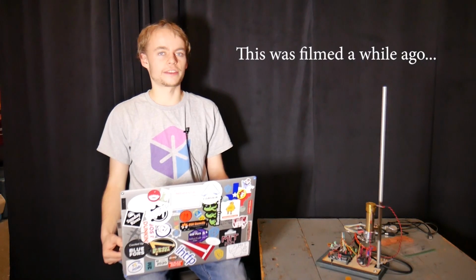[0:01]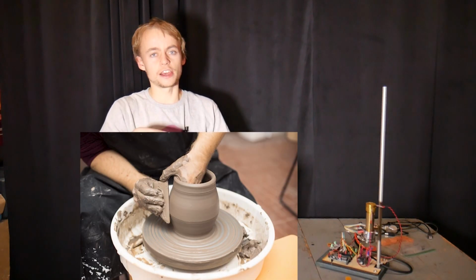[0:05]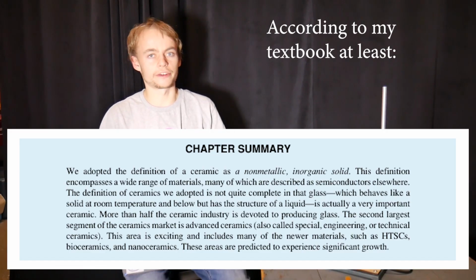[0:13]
Last semester I took a ceramics class. Now I know what you might be thinking, oh, Tanner was there with a spinning wheel making pottery and whatnot. But this is not what the class was about. This was about analyzing ceramics, and ceramics meaning not only pottery, but glass and rock and granite and all other kinds of ceramics, and looking at that from both a scientific and archaeological perspective.
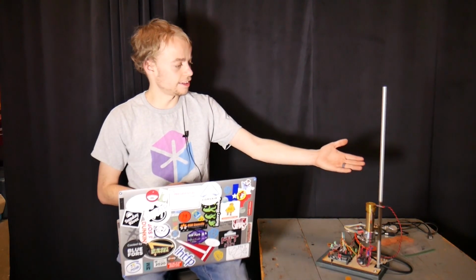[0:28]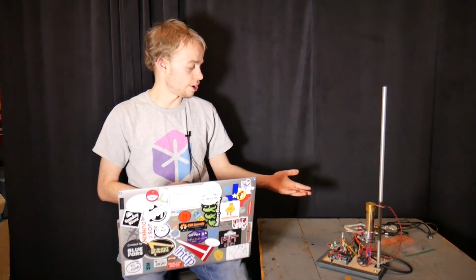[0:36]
The final project for this class was very open-ended, and I chose to make something called a Lees disc apparatus. Now, a Lees disc apparatus is something that measures the thermal conductivity of insulators. And in this video, I'm going to show you how I made this and show you it working, because it's pretty cool. Let's get started.
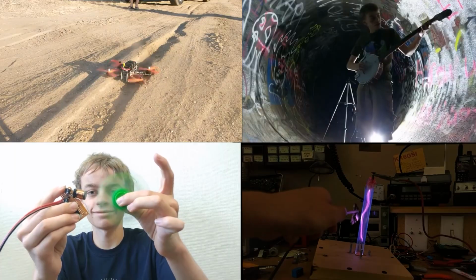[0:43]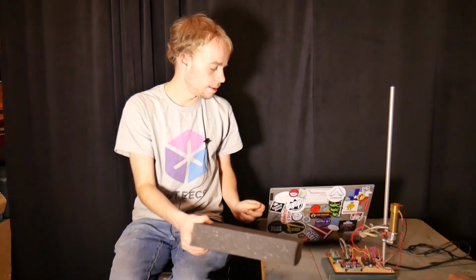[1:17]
Thermal conductivity is a physical property of a material. It describes a material's resistance to the flow of heat flowing through it. On this piece of copper, for example, the thermal conductivity is approximately 388 watts per meter Kelvin. This means that it is a very good conductor of heat. If I were to hold this piece of copper and put something hot on the other side, like a soldering iron or a flame, my finger holding the other side would immediately start getting very hot, because it conducts heat very quickly and very efficiently through it.
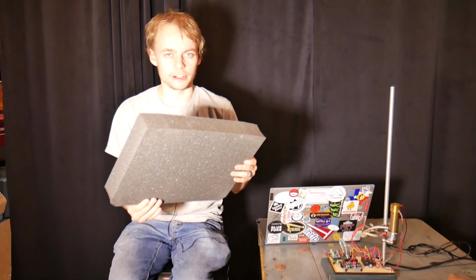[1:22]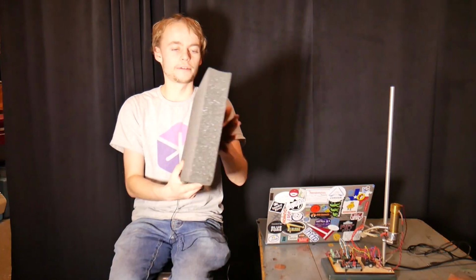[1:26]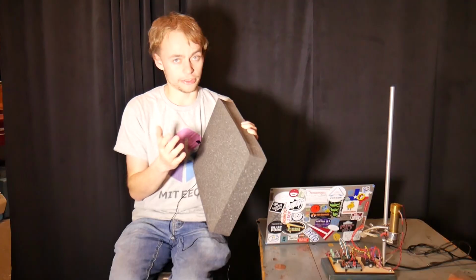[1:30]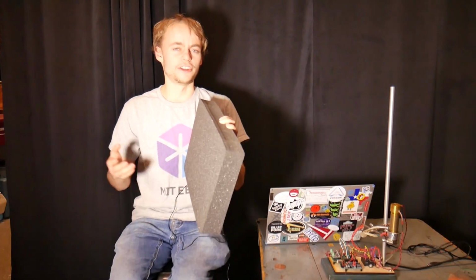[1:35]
On this piece of styrofoam, for example, that has a thermal conductivity of around 0.01 watts per meter Kelvin, I could put my hand on one side and have some large heat source that didn't melt the styrofoam, obviously, and I could keep my hand there and it would be fine because there's not very much heat flowing through it.
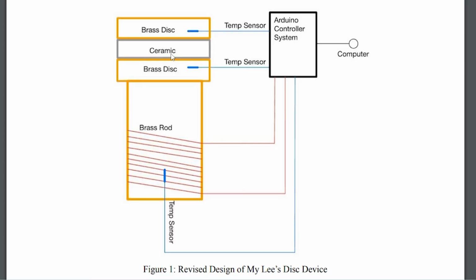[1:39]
It's fairly straightforward to measure the thermal conductivity of a material using a Lees disc device. The basic working principle, shown in this diagram, uses two brass discs with your test material in between. The bottom brass disc is heated to a constant temperature using some type of heater and feedback system. The heat then flows via conduction through the ceramic or other test material and into the top brass disc. This heat then dissipates via convection and radiation into the outside world.
If you leave the system running for long enough, it's going to reach a steady state where the top brass disc is at a constant temperature. This means that the heat being transferred into this brass disc through this test material is equal to the heat leaving the brass disc through other methods. The temperature difference between the top and bottom brass disc, along with some other properties of the top brass disc, the ceramic, and other things, can be used to determine the exact thermal conductivity of your test material.
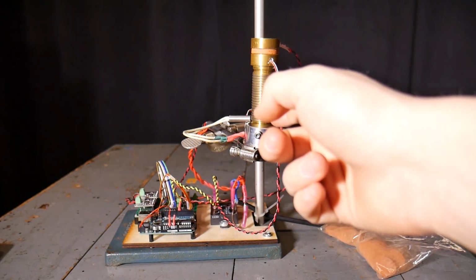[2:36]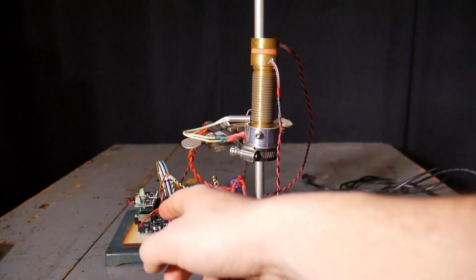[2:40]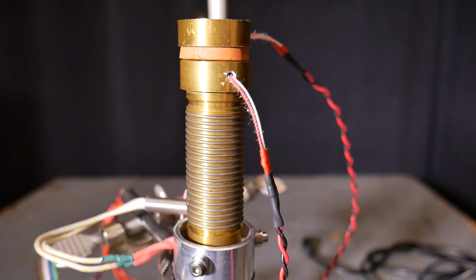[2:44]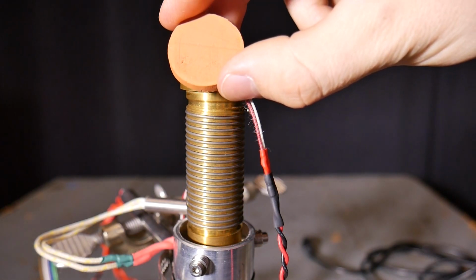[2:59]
This is my Lees disc device. It can be divided into two parts. We have the measurement unit up here and the electronics down here. Everything is mounted on this lab stand that I found in the trash. This is the actual measurement section of my device. This is the top brass disc. It has an embedded thermal probe inside. This probe goes all the way to the very middle and can give very accurate readings of this brass disc temperature. I have my material that I'm measuring.
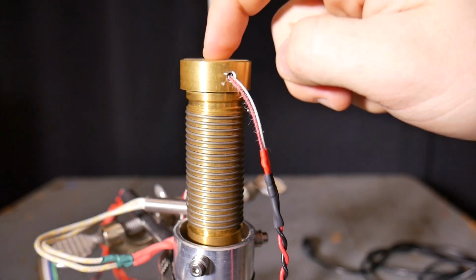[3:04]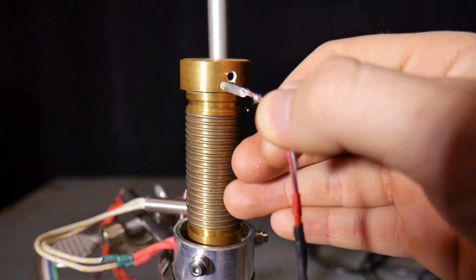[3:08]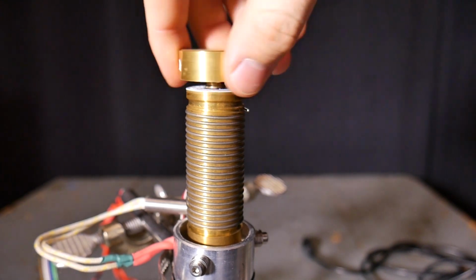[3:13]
This is fired red ball clay. Then I have the bottom brass disc that's attached to the heating element. The bottom brass disc also has a thermal probe inside and can be unscrewed from the heating element to allow for different size brass discs to be attached. This works if you want to measure smaller or larger samples.
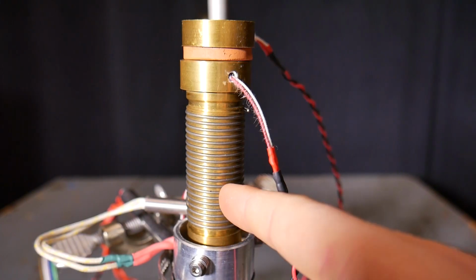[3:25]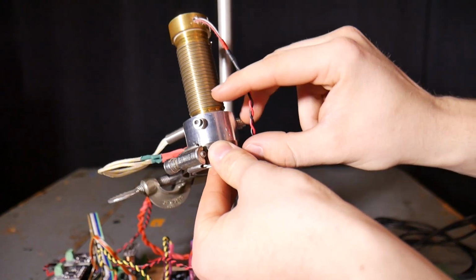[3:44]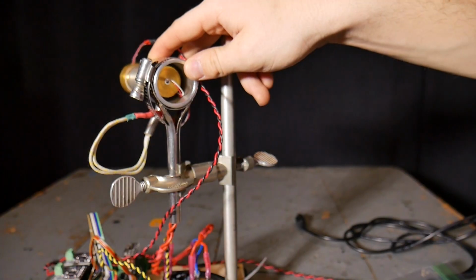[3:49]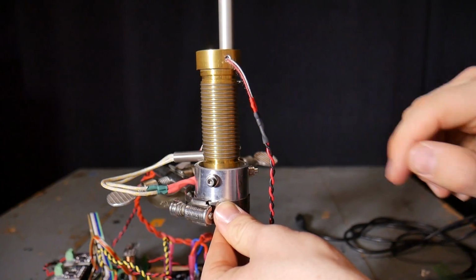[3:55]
The heater for this device consists of a flexible heating element that's been wrapped around threads that I turned into this piece of brass. All brass items on here were turned on a lathe in my school's makerspace. As a fun side note, this lathe actually runs on a Prius motor. Pretty cool. If I lift this up, you can see that the heating element has another hole drilled in the bottom where a third thermal probe is inserted. This is inserted all the way to around the middle of the heating element, such that it has a very quick response time to changes in the state of the heater.
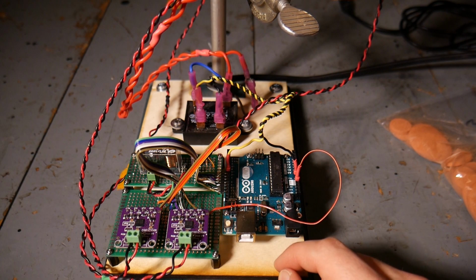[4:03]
All the electronics for this project are mounted to a piece of laser cut wood that is then mounted to the base of the lab stand. This Arduino Uno here runs the control loop that keeps the bottom Lees disc at a constant temperature. It is also used for data collection from the various thermal sensors. These two boards, which are knockoff Adafruit breakout boards for the MAX31865 chip, basically serve as analog to digital converters that digitize the input from the temperature sensors and send them as data back to the Arduino.
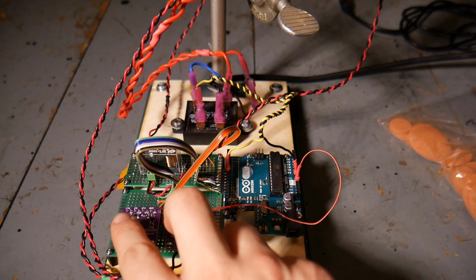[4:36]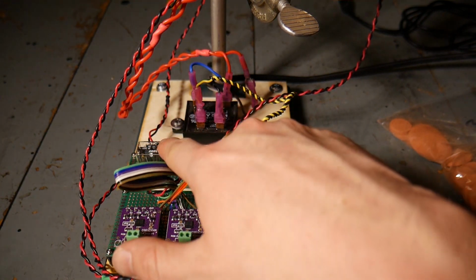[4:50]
Now you may be wondering why I have two of these boards and three temperature probes, and that's because I wanted to use one of these boards to measure both the top brass disc and the bottom brass disc. This makes the delta temperature result more accurate. I accomplished this using this ice cube relay here.
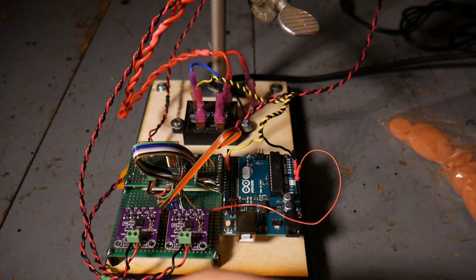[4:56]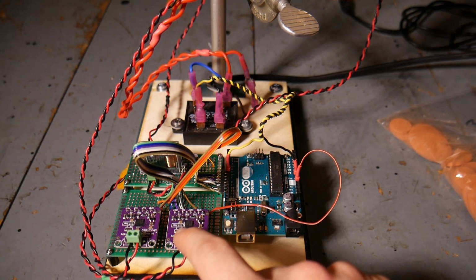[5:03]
This switches the input to this board between both thermocouples back and forth. So that way we can get a very accurate reading of the temperature difference across them. This board here runs with the control loop, and this is just pulling the information from the thermal probe that is inside the heating element.
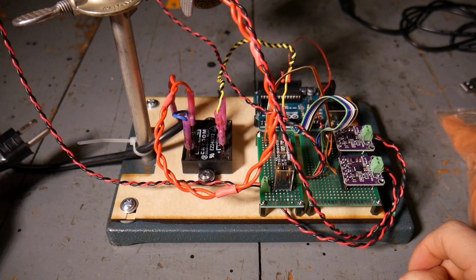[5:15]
To actually control the heating element, I'm using this solid-state relay back here. Power for the heating system comes from this cord, which is just plugged into the wall. The heater is only around 125 watts, so it doesn't take up that much power. Power for the rest of the logic circuitry is brought over USB when it's plugged into a laptop.
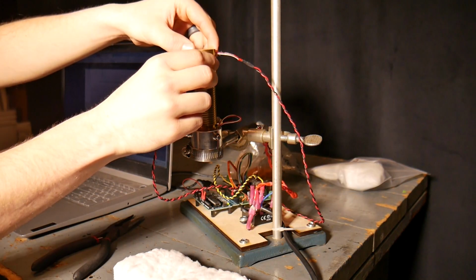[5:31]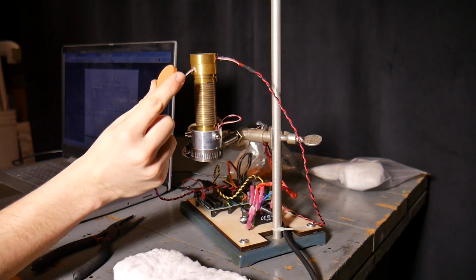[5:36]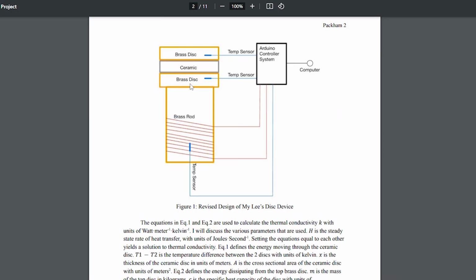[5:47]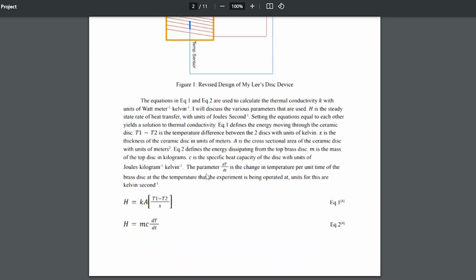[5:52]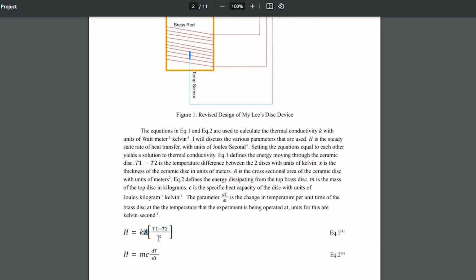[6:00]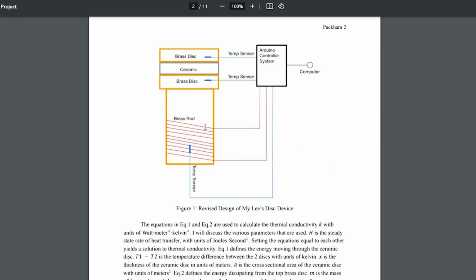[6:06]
Let me demonstrate how you can use this Lees disc device to measure the thermal conductivity of a piece of ceramic. In this case, a 30mm disc of red ball clay. To measure the thermal conductivity of a ceramic, you need to know these two equations. Equation 1 measures the rate of heat transfer between the bottom brass disc and the top brass disc via conduction through the ceramic. This K is the coefficient of thermal conductivity, this A is the cross-sectional area of the ceramic, this X is the thickness of the ceramic, and T1 minus T2 is the delta temperature between the top brass disc and the bottom brass disc.
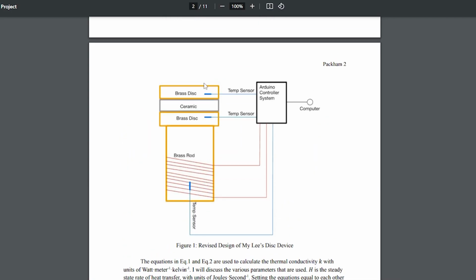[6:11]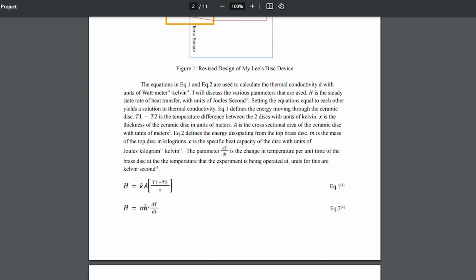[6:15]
Equation 2 measures the heat leaving the top brass disc via convection and radiation. The parameters here are the mass of the top brass disc, the specific heat capacity of it, and this rate of change of temperature of the top brass disc at a given temperature. Now, this is something that we're going to have to calculate with the specific top brass disc that we're using here. And I'll show you how to do this.
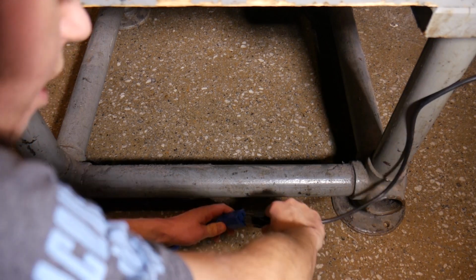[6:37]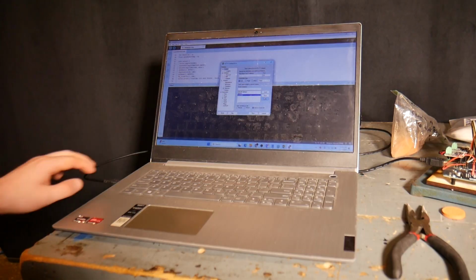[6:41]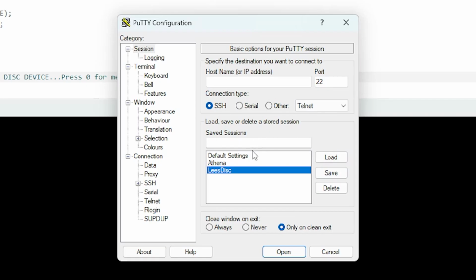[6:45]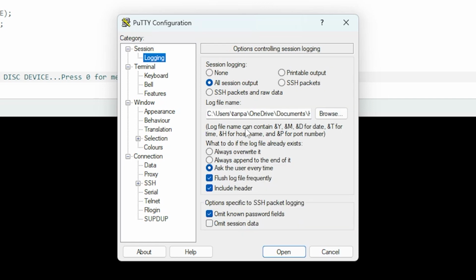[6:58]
I'm going to start by plugging in the Lees disc device to the outlet, as well as plugging the USB into my computer. I'm then going to open PuTTY on my computer and open the system parameters for the Lees disc device. It's connected over COM port 3, running at this speed over serial port. I have everything from this session being logged to a CSV file in my documents.
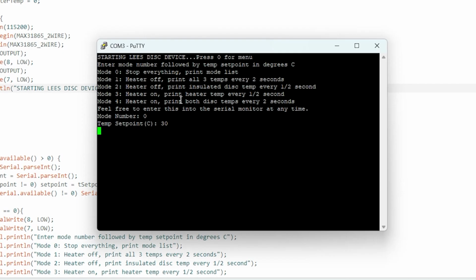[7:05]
This is the user interface for the Lees disc device. Mode 0 turns off everything and prints the mode list. Mode 1 turns the heater off and prints all three temperatures every 2 seconds. Mode 2 turns the heater off and prints the insulated disk temperature every half second. This is useful for when you're trying to measure that rate of change of temperature of the top brass disk as it cools down. Mode 3 turns the heater on and prints the heater temperature every half second.
This is useful for when you're trying to heat up the device and watch for when it reaches steady state. Mode 4 turns the heater on and prints both disk temperatures every 2 seconds. This is very useful for actually taking that delta T measurement at steady state for the device. Right now it's at mode 0, and the temperature set point is at 30 degrees Celsius. So to find this rate of change of temperature of the top brass disk, I'm going to set this to, let's say, 200 degrees Celsius. So I'll press mode 3 and then 200. So 3 space 200.
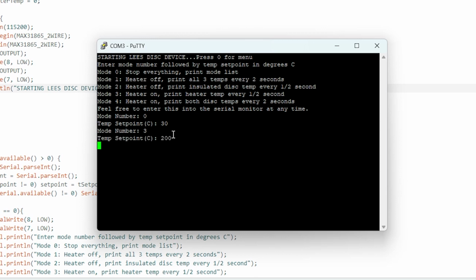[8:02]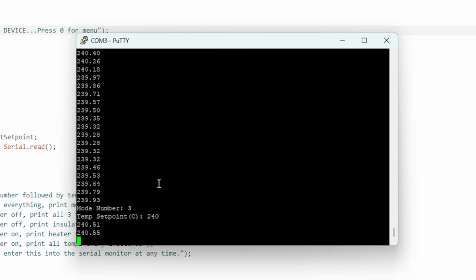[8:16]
So we're now in mode 3, and the temperature set point for the device is 200 degrees Celsius, and you can see that these numbers are starting to rapidly rise. This is the temperature probe inside the heater. As a quick change of plans here, I reset the temperature set point to 240 degrees. The internal heater temp is sitting at around 240 degrees Celsius, plus or minus half a degree.
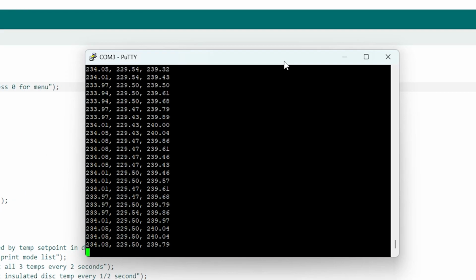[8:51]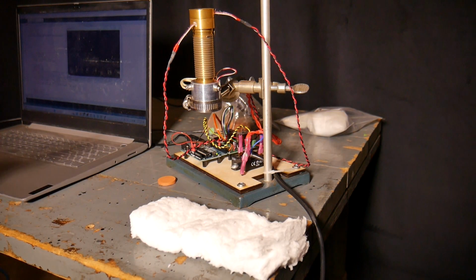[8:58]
If I press 4, we'll go into mode 4, and we'll be able to read the readouts of all three temperature probes. So the top brass disc is sitting at around 230 degrees Celsius, the bottom brass disc in the left column is sitting at 234, and the internal part of the heater is sitting at, what I said before, around 240 degrees Celsius. I'm now going to turn off the heater and start printing the insulated disc temperature every half second by pressing mode 2. All right, so now the heater's off and the insulated disc is going to start cooling down.
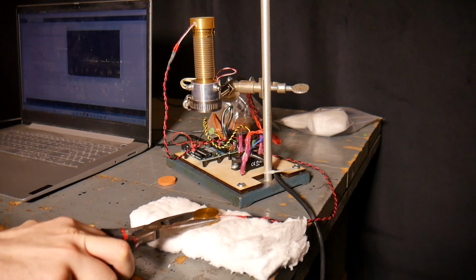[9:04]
And to get a proper reading from this, I'm going to set the insulated disc on this piece of insulating fiberglass. Now, it's not going to radiate or conduct heat out of the bottom, because that's where the heat was originally coming up in the test device.
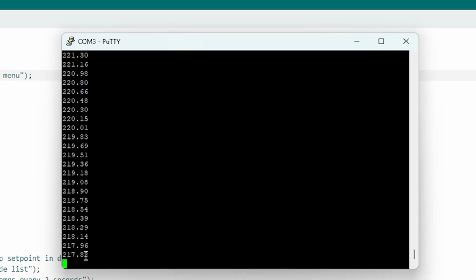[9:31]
It's only going to radiate heat through radiation and convection from the top and the sides, which is what we need to calibrate it. So I'll let the disc sit here, and we'll be able to see the temperature of this disc start to cool down through the PuTTY terminal. Now, the key here is just to sit and wait. We're going to let this cool all the way down to around 50 degrees Celsius, then we'll be able to plot the data points from all these and be able to gauge the approximate rate of cooling at any given
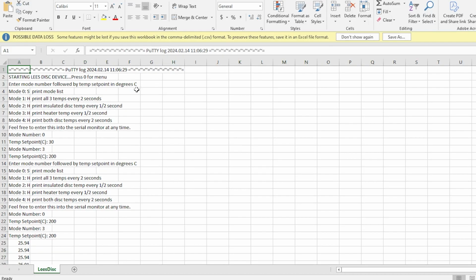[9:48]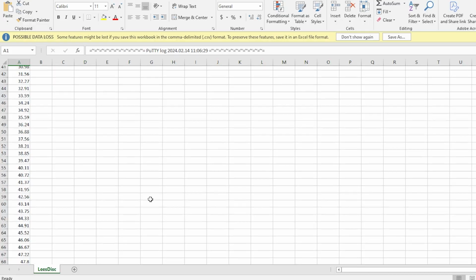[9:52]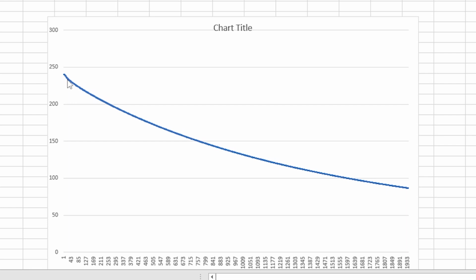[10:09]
temperature. This is the data log of everything that was printed in that serial terminal. You can see here at the beginning when the menu shows up, and then I set the set point to 200. Down here, the set point is switched to 240 degrees Celsius. Here's where the mode is set to 2 and the top brass disc begins to cool on the piece of fiberglass. This graph shows the rate of cooling of the brass disc over the course of 1933 seconds.
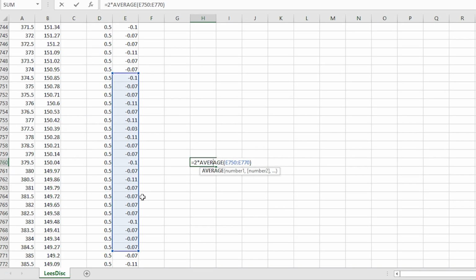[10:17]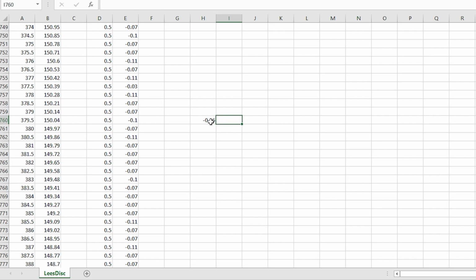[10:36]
To find the rate of cooling at a particular temperature, in this case 150 degrees Celsius, I'm going to take the average of the individual temperature drops per half second and multiply that by 2. This gives us an average of negative 0.16 degrees Celsius per second at around 150 degrees Celsius. Keep this number in mind. This will be useful for determining the coefficient of thermal conductivity at 150 degrees Celsius.
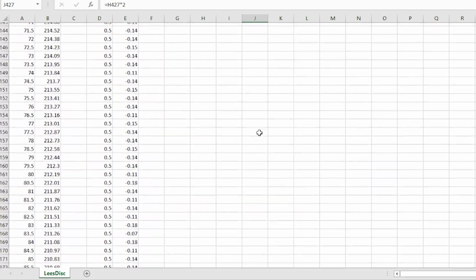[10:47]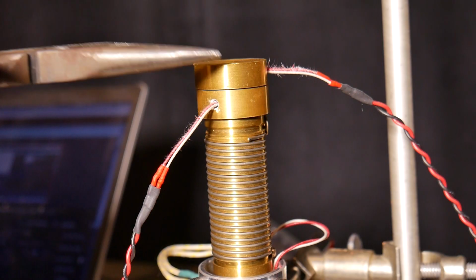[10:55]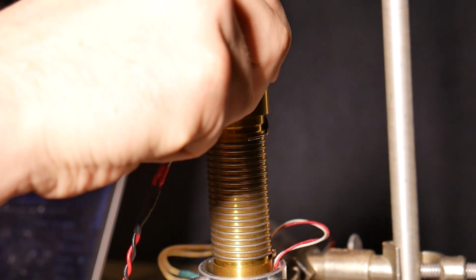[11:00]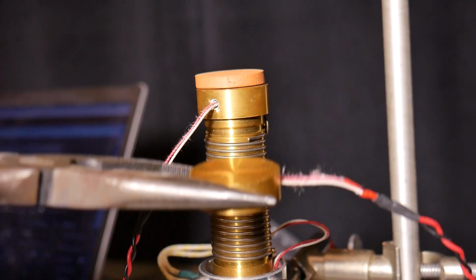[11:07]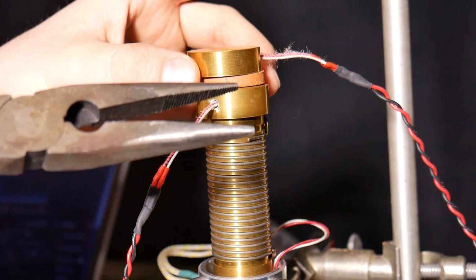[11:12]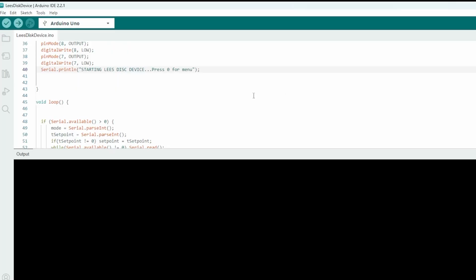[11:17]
As you can see, different measurements of cooling rate that I've taken have been higher the hotter the device is, which makes sense. As you can see in the chart, when the brass disc is hotter, it cools faster than when it's colder. Now that the calibration is done, it's time to actually measure a sample. So I'm going to put this piece of ceramic on top of the bottom brass disc and replace the... I just dropped it. I'm now going to replace the top brass disc on top of the piece of ceramic. There we go.
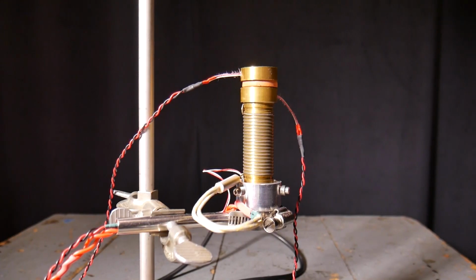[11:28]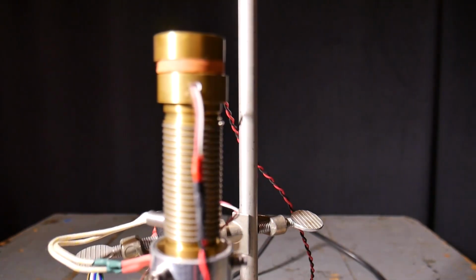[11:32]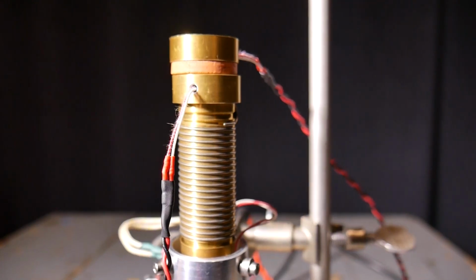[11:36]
Now back to the computer. I know I used PuTTY before for the serial monitor, but the Arduino serial monitor works the same, and you get the added benefit of nice live plots. So, I'm going to fire this up again and try to get that top disc to approximately 150 degrees Celsius. So, let's get this started. Let's heat this thing up to, let's say, 160 and wait till it reaches steady state.
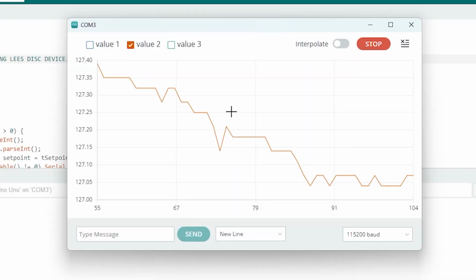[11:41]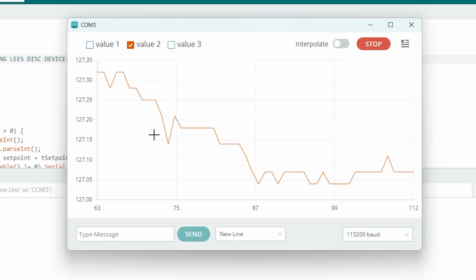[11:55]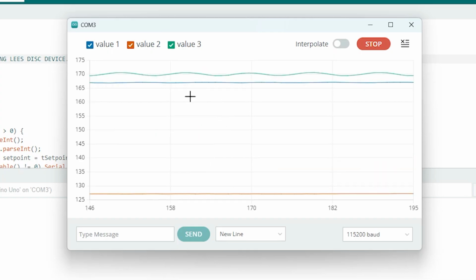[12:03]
The system has finally reached steady state after operating for about 30 minutes. This is the temperature of the top brass disc over time, and you can see it decreases a little bit, and then it's kind of leveled off, and then it will start increasing a little bit. It's sort of oscillating around this steady state value of around 127.15 degrees Celsius. Let's take a look at the different temperatures and how they're changing over time.
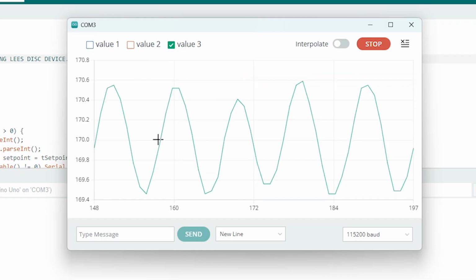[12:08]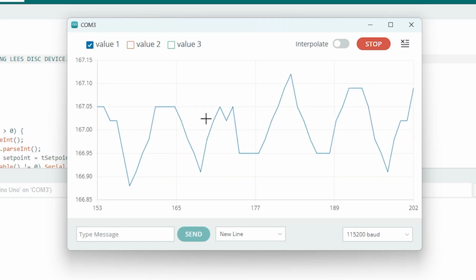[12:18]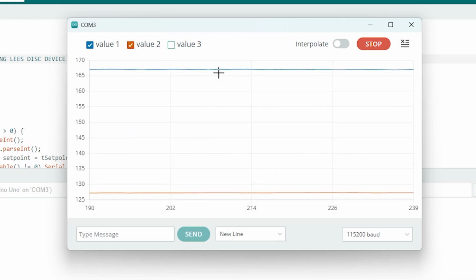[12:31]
This is the internal heater temperature, and you can see it's oscillating with an amplitude of around 1 to 2 degrees Celsius. This is just due to the internal control loop that I have running. The bottom brass disc is also oscillating with a smaller amplitude. The amplitude here is around 0.1 degrees Celsius. It's also reached a steady state. The steady state difference between the top brass disc and the bottom brass disc, or the delta T across the piece of ceramic, is 40 degrees Celsius. This number is going to be used in the calculations for finding that final coefficient of thermal conductivity.
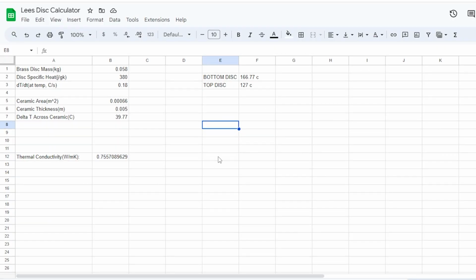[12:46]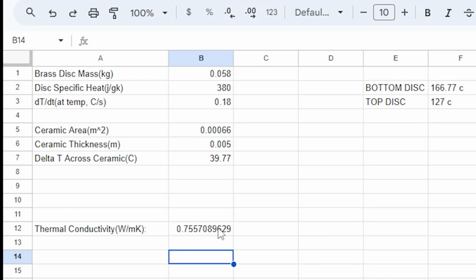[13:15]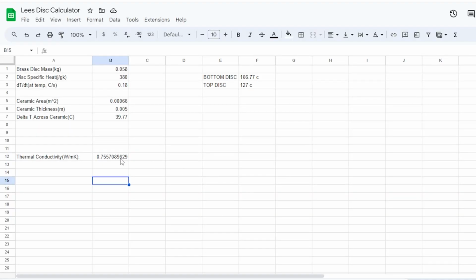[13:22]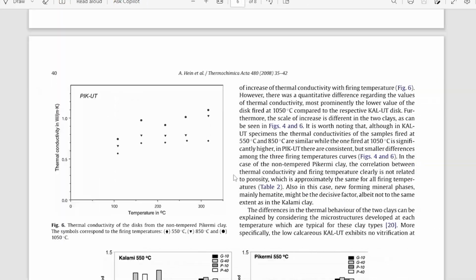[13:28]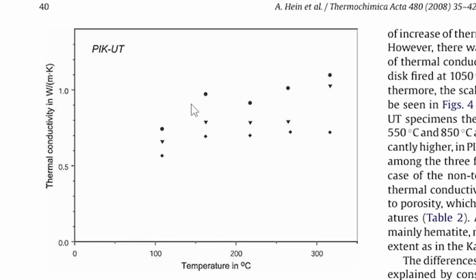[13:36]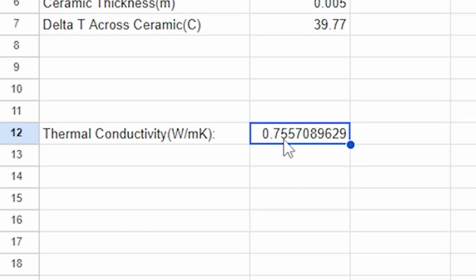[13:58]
As a sanity check to make sure that my number is approximately in the right range of what it should be, I took a look at this paper. This paper is written by a couple of archaeologists that were trying to discover the coefficient of thermal conductivity for some other earthenware ceramics found in ancient Greece. And in their experiment, using a commercial Lees disk device, they found that when running the Lees disk device at a temperature of around 120, 130 degrees Celsius, they got a thermal conductivity between 0.5 to around 0.8, depending on the firing temperature of the ceramic, which is perfect. This lines up very closely to the thermal conductivity that I gathered when using my home-built Lees disk device.